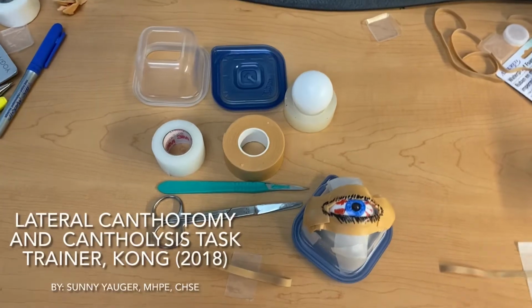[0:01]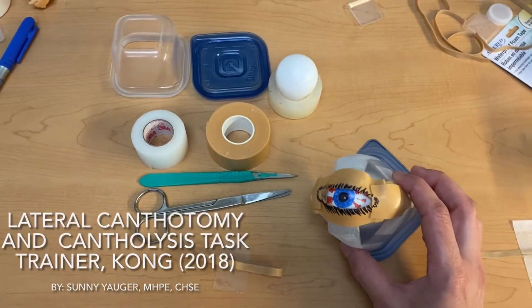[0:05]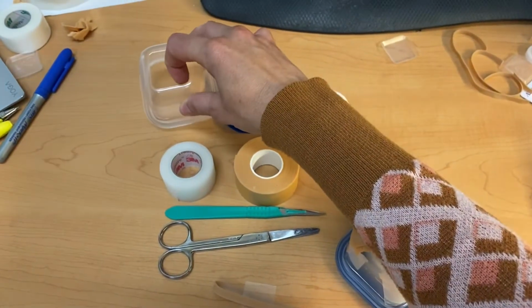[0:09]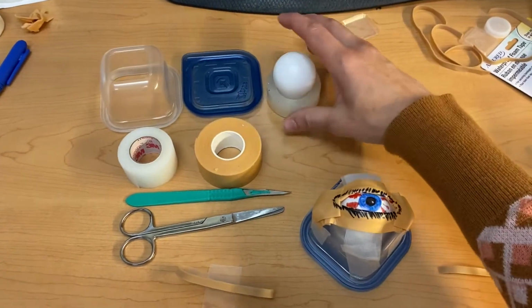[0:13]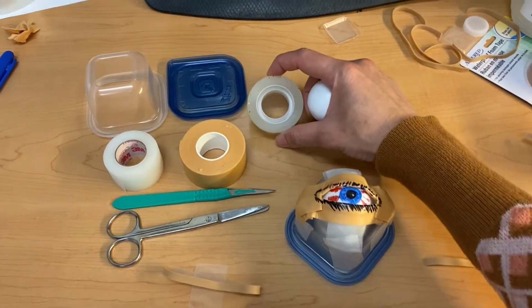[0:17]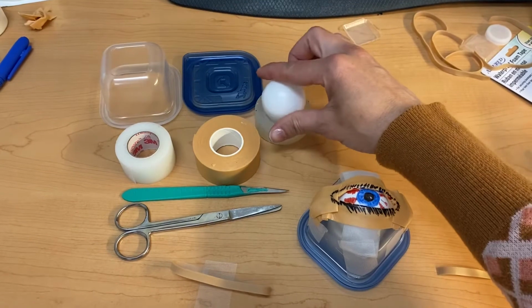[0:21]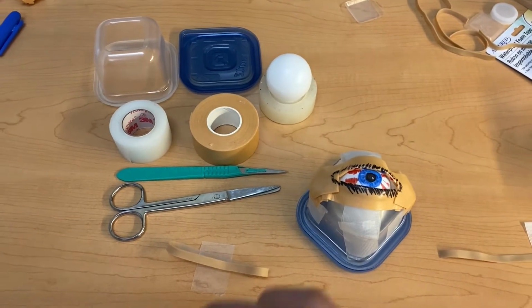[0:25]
Hello, so today we are going to make a homemade lateral canthotomy task trainer. So what you'll need is a small container with the top cut off and the bottom cut out. You'll need a lid, a ping pong ball, and a base to put your ping pong ball on with a 1-inch diameter and a 1-inch height. You can use a roll of tape, or you can buy a pool noodle and cut it into 1-inch heights to do that.
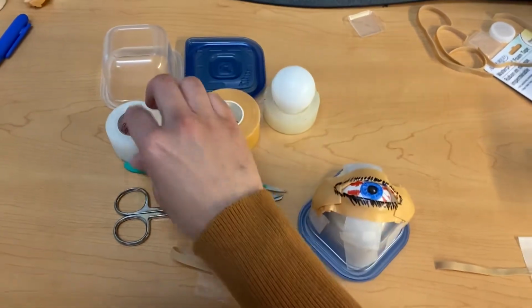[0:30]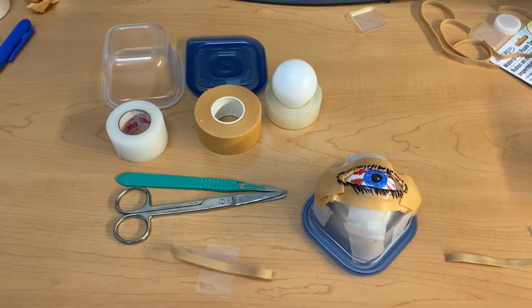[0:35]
3M Transpore tape, foam tape that I got from the dollar store. I have a scalpel here, scissors, and then you will need a size 64 rubber band.
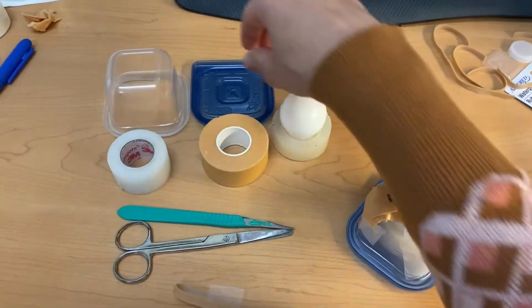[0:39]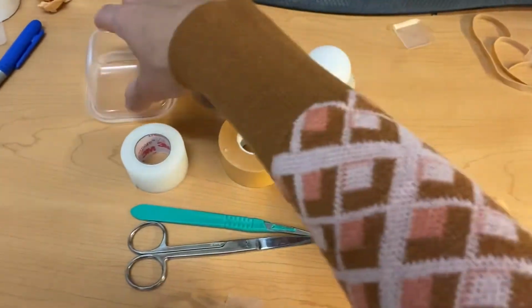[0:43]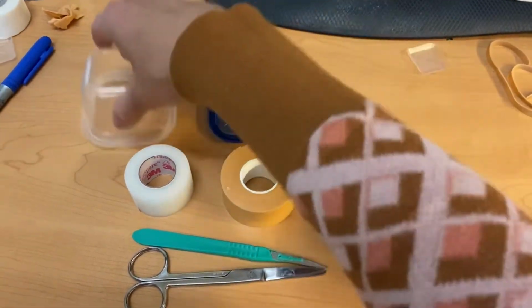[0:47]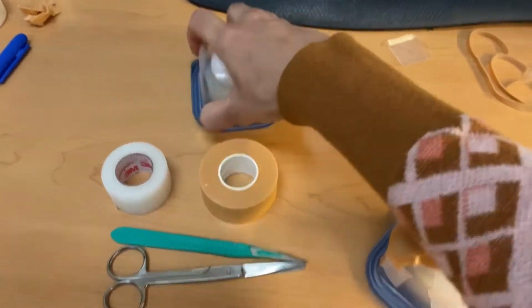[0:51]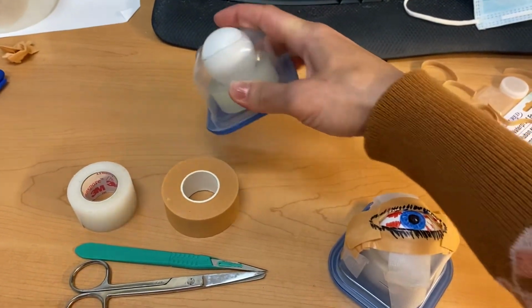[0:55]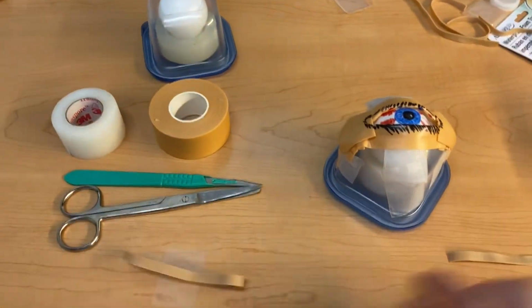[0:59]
So the first thing that you're going to do is assemble your eyeball. You take your base here, put it on top, take your ping pong ball, put it on top of that, take your container, and go ahead and close it. And so what this simulates is your orbital socket with the eyeball protruding from it. So that's step one. Step two is taking your rubber band and you're going to bisect it.
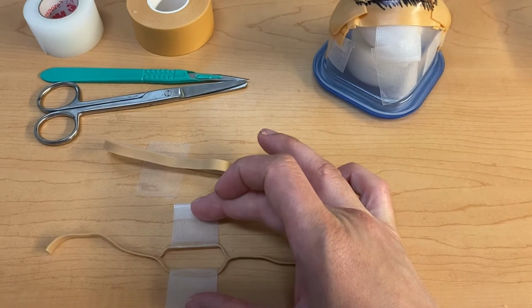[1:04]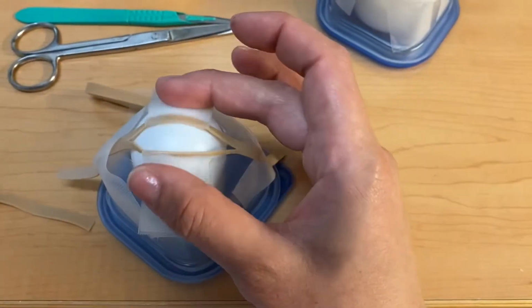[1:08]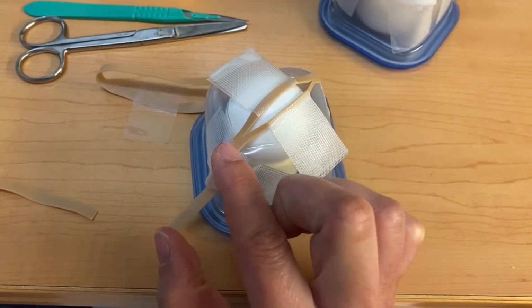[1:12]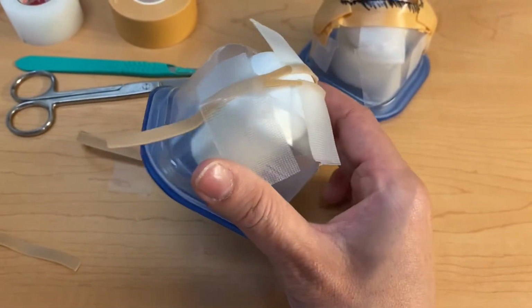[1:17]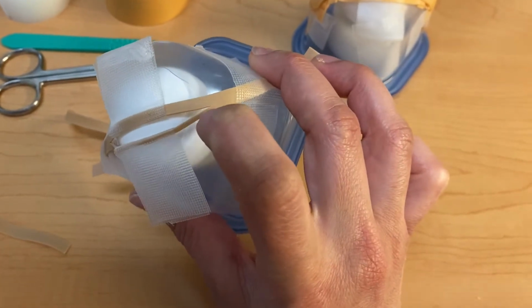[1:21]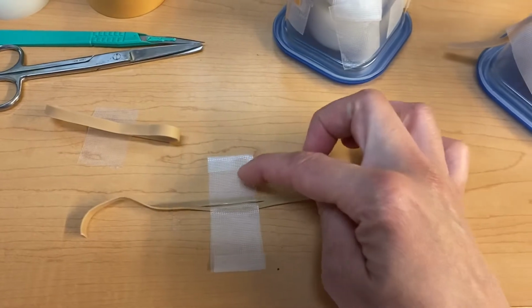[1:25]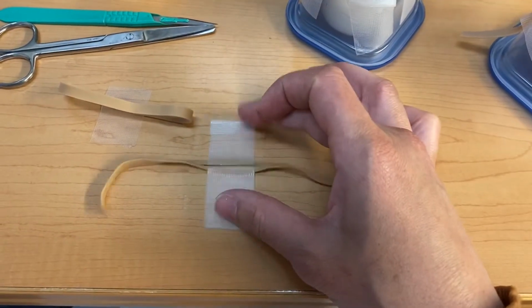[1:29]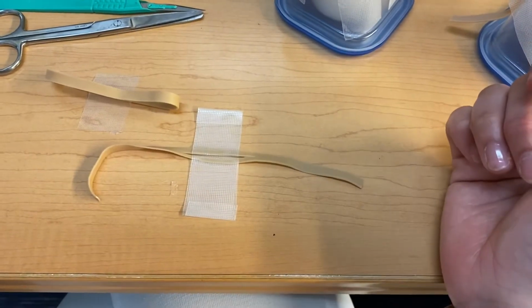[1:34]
Now you want to make sure when you bisect it that, for example, when you put it on your eyeball, you don't surpass the edges here, or try not to as much as you can. So don't do this step. You don't want to tape it. This is just for showing you the purpose of cutting it. Just don't cut it too far. So once you've done that, you put a piece of transport tape on 12 o'clock and 6 o'clock. And what this does is it simulates your inferior and superior lateral canthus tendons.
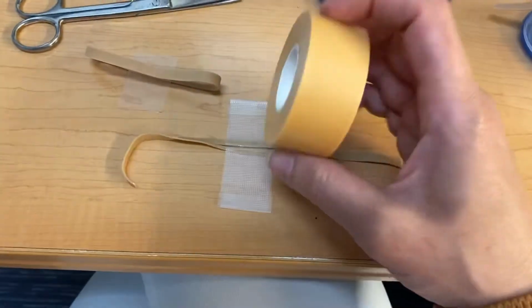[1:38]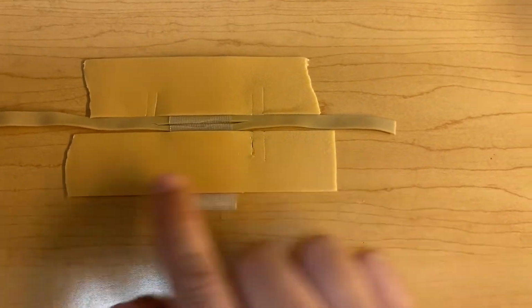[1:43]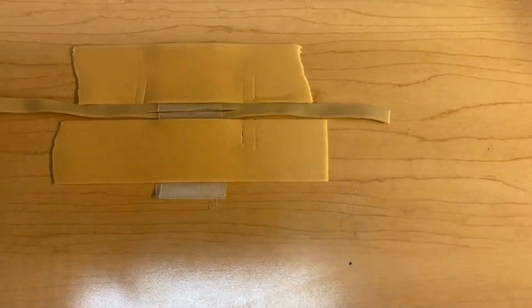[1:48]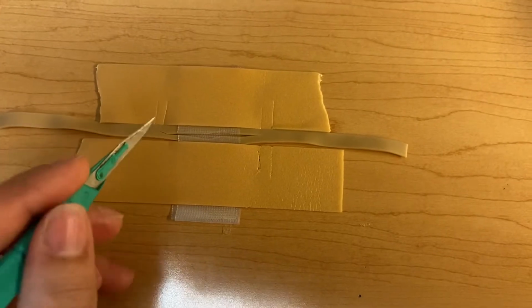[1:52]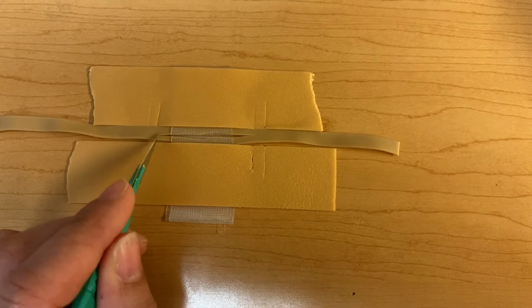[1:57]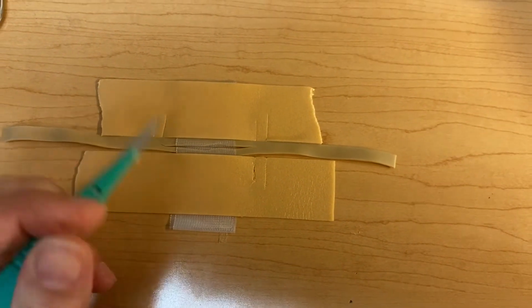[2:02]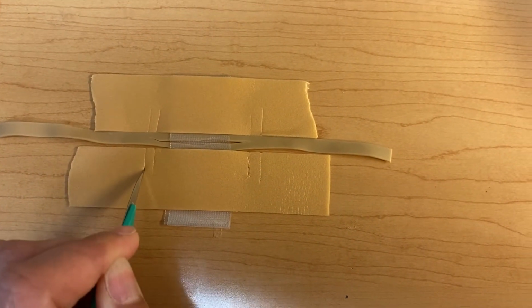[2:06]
So the next thing we're going to do is build the tissue with our foam tape. To make the tissue for your eye, I took some foam tape and taped it here, but I taped it gently so when I pull it off, it doesn't rip on me. Then you're going to make some slots here. I've taken my scalpel and found the edge of my tendons where they're going to cut. So all I'm going to do is cut down here and cut down here. And what I'll end up doing is taking these flaps and just flipping them over.
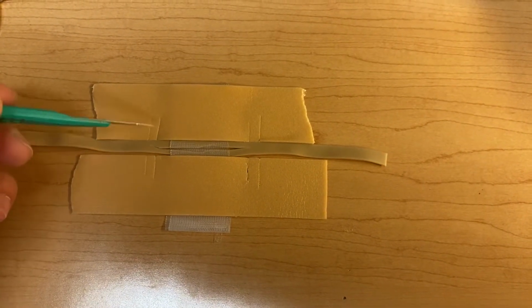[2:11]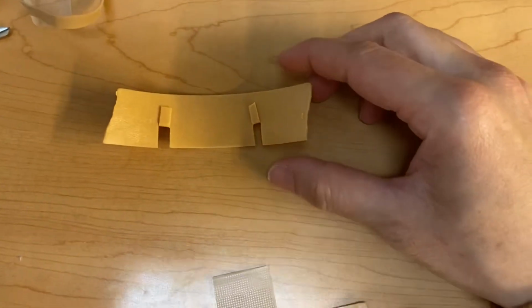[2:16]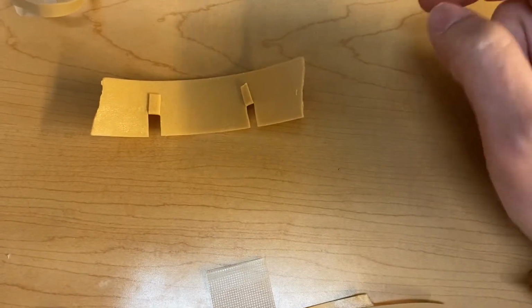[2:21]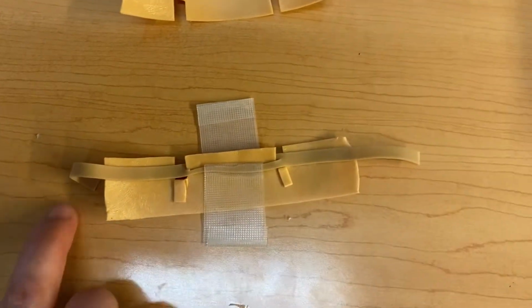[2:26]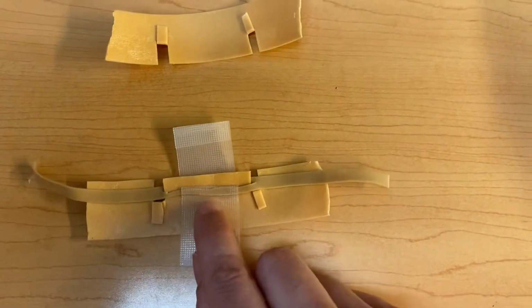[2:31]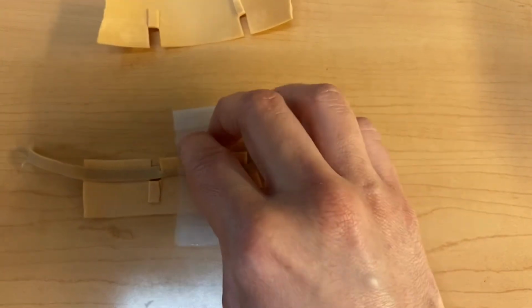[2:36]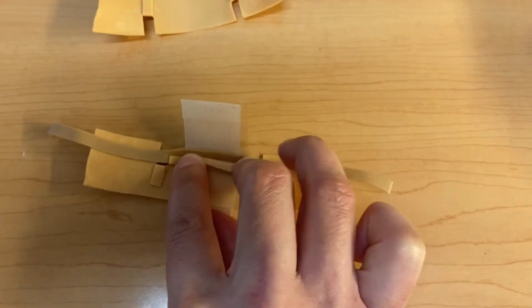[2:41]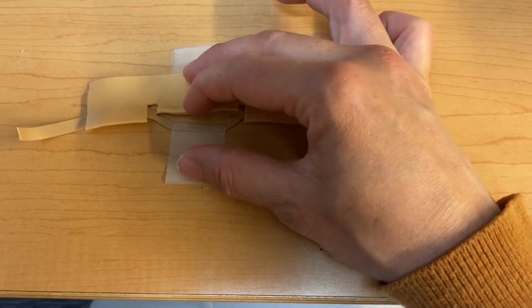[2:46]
So I've done the same thing, 1, 2, 3, and 4. So the next thing you're going to do is take where you've outlined your flaps and fold them over and put them to the sticky part. After that, this is the tricky part because everything is so sticky. You're going to take your rubber band, put this flap through the middle, and make sure that the rubber band is straight. And then you're going to fold this over. And what it does is it creates the slit in the eyelid. So it'll look like this. So when you open it, this is the first slit.
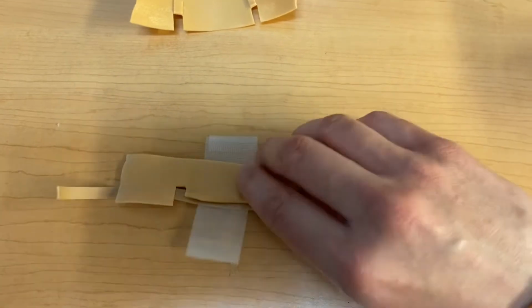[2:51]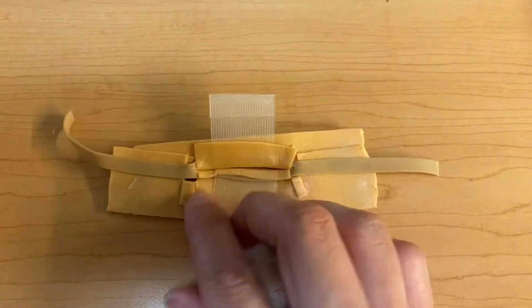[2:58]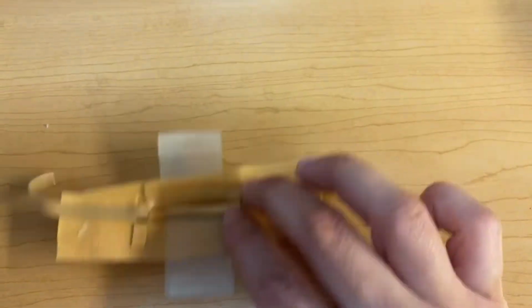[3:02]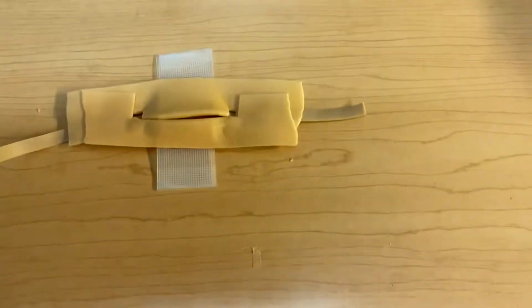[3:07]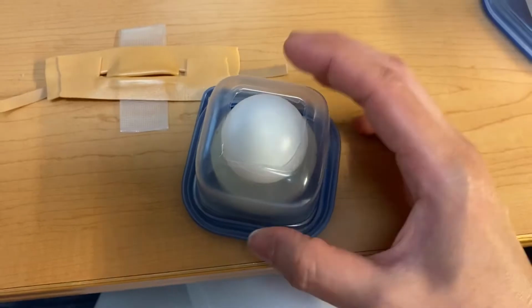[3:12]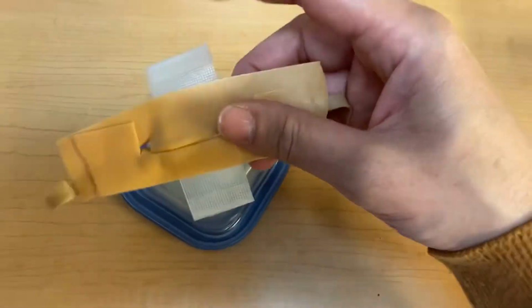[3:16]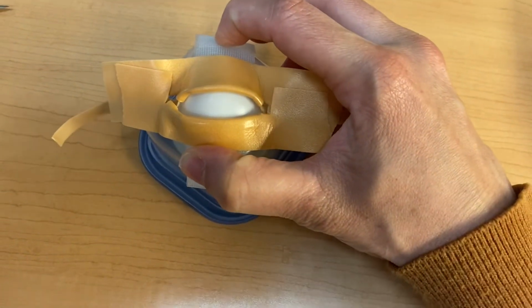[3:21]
Okay, so I'm going to do the same thing that I did on this side using this foam tape. Okay, so I've assembled everything. This is what the back looks like. I'm going to flip it over, and this is what the front will look like. Next thing we're going to do is tape it to our orbit. So we'll take this and put it diagonally, and then we'll tape the edges and tape it down.
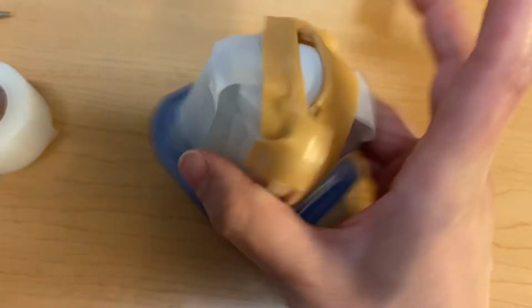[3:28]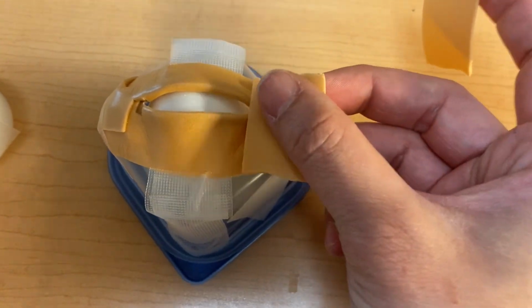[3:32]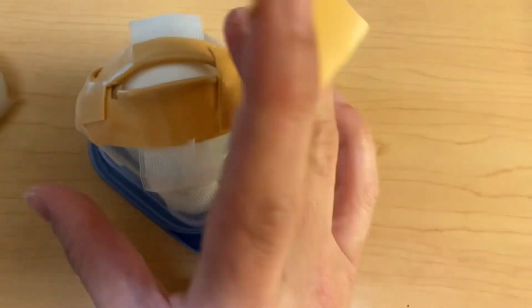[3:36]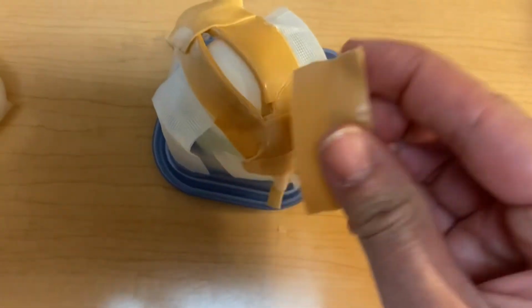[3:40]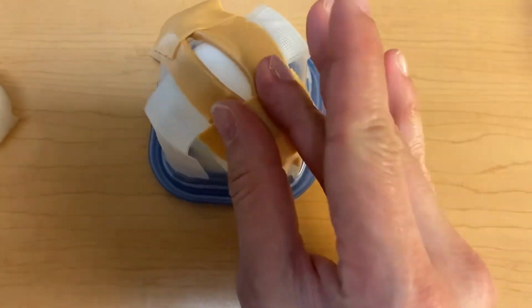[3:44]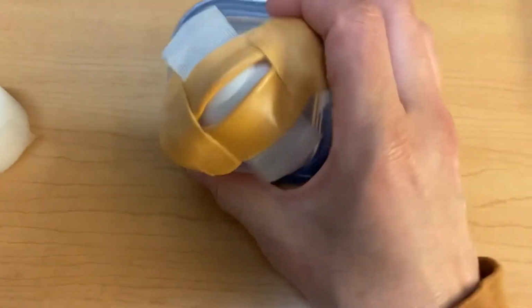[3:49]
Okay, so once I've taped everything down on the sides, I will add some tissue here on the side. So when they do a lateral canthotomy to get to the cantholysis, they at least have something to cut. And there you go. So we'll color it in and make it look prettier.